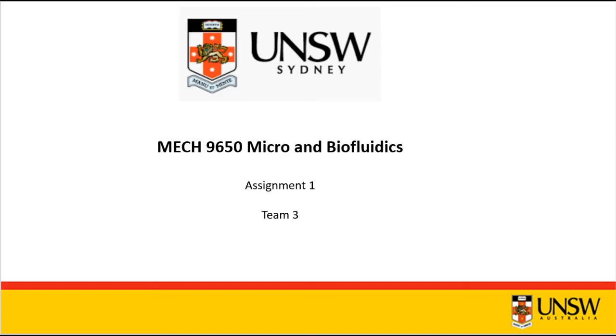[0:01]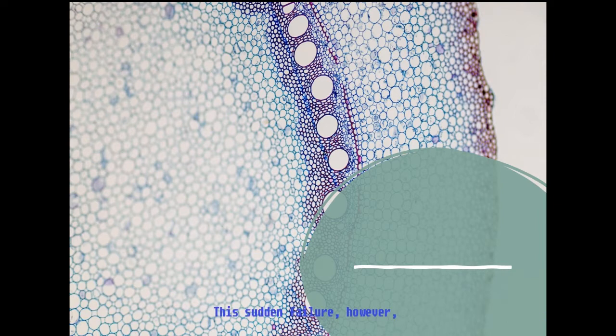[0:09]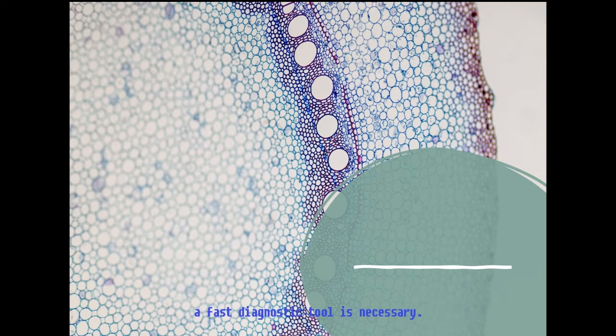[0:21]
Kidney disease occurs in about 1 in 10 adults in Australia and can often appear suddenly. This sudden failure, however, 90% of the time is symptomless, with pains showing only at the beginning of kidney failure. The common detection method involves a 24-hour urine analysis. A fast diagnostic tool is therefore necessary.
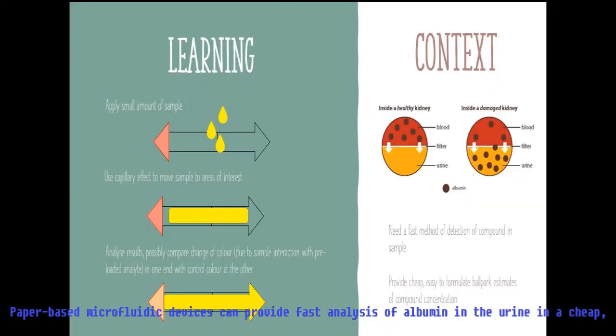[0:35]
Failure of the kidney is always coincident with the presence of albumin in the urine, a compound that is usually filtered by the kidneys. So rapid detection of albumin in urine can provide vital information to emergency health services.
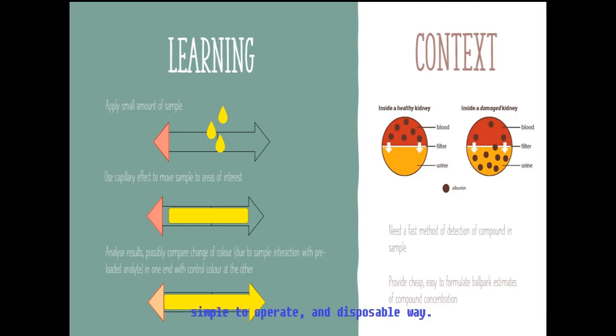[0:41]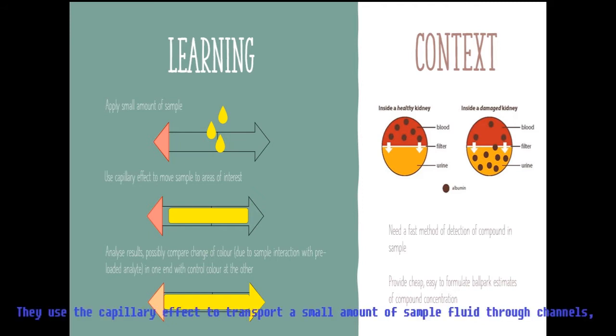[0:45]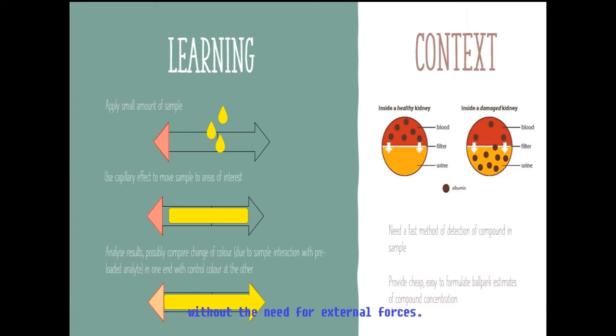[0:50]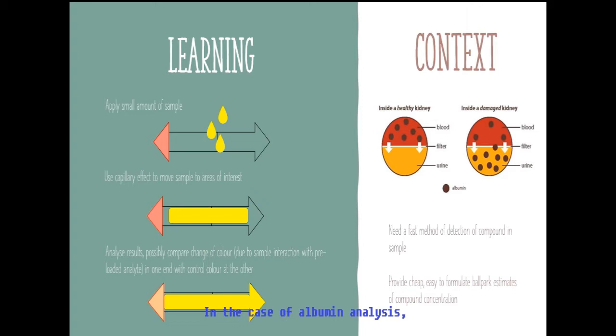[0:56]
Paper-based microfluidic devices can provide a fast analysis of albumin in urine in a cheap, simple to operate and disposable way. They use the capillary effect to transport a small amount of sample fluid through channels without need for external forces. These channels may contain reagents that interact with the sample should an analyte be present. In the case of albumin analysis, reagents exist on the market that could be added to microfluidic channels to create a change in colour should albumin be in the urine.
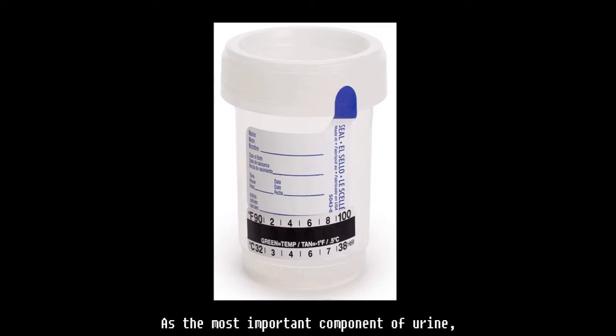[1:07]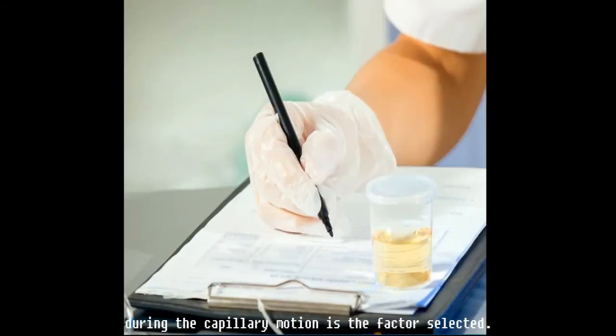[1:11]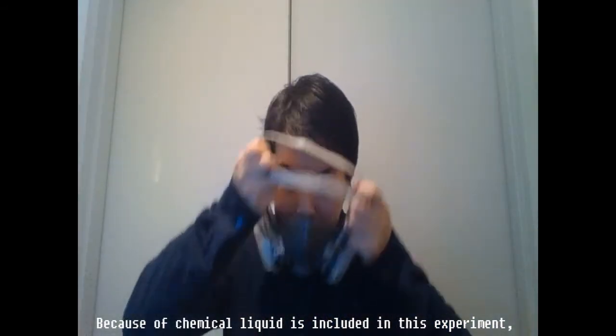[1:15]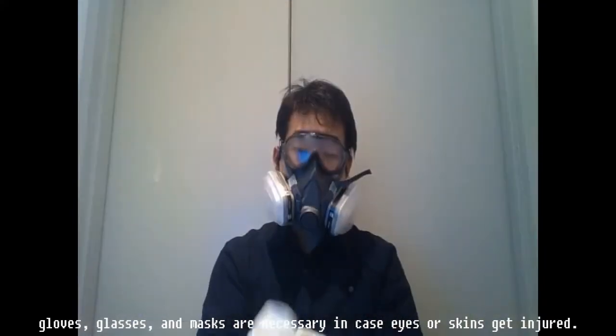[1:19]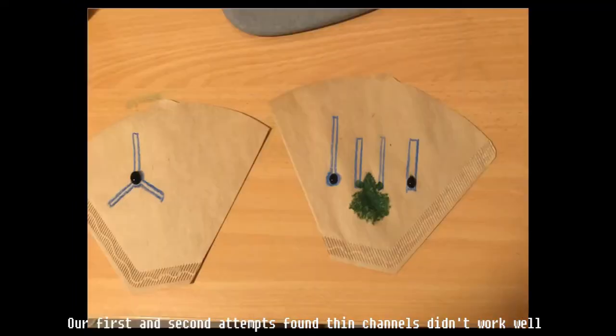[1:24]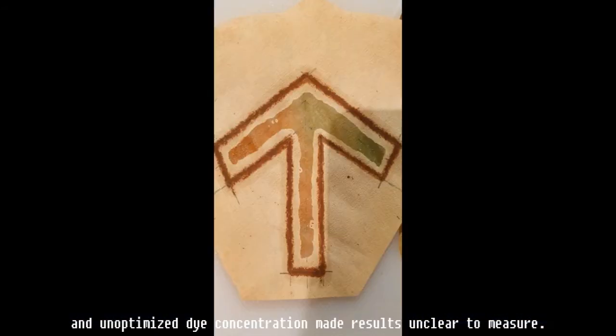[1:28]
As the most important component of urine, inorganic salt was the factor selected, since it plays the most important role during the capillary motion. Because chemical liquid is included in this experiment, gloves, glasses, and masks are necessary in case eyes or skin get injured. Our first and second attempts found thin channels didn't work well, and unoptimized dye concentration made the results unclear to measure.
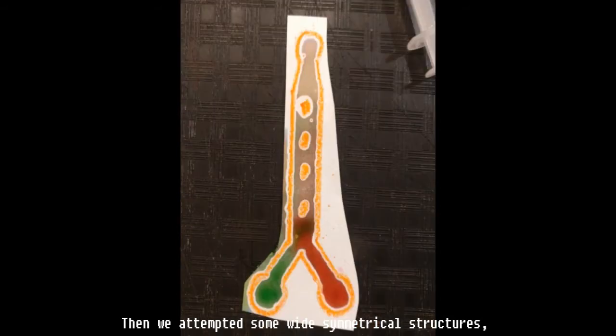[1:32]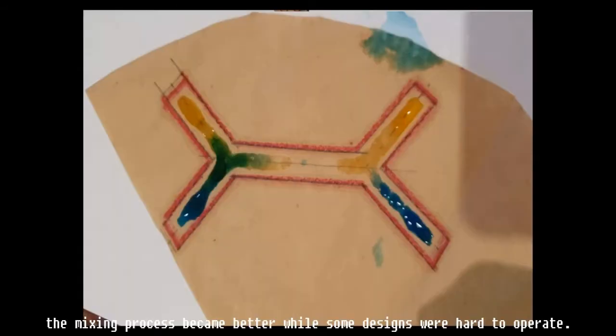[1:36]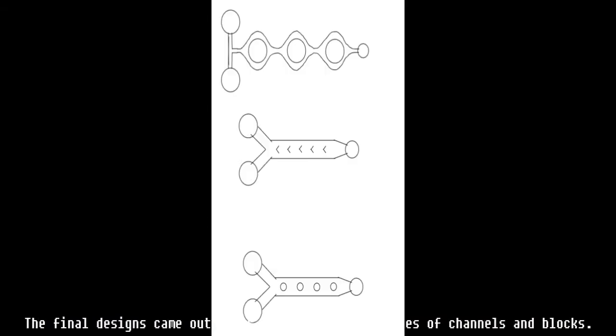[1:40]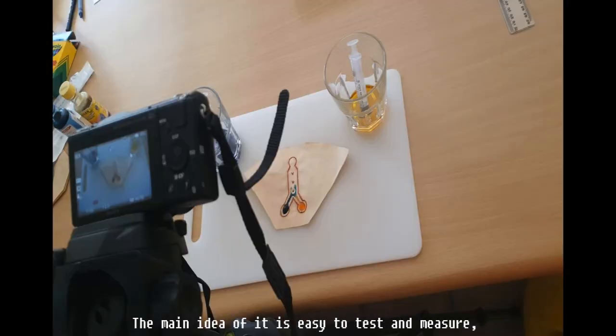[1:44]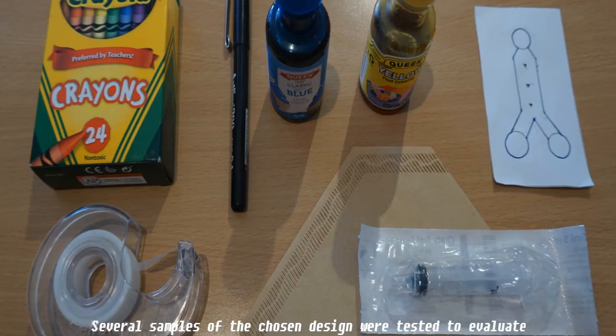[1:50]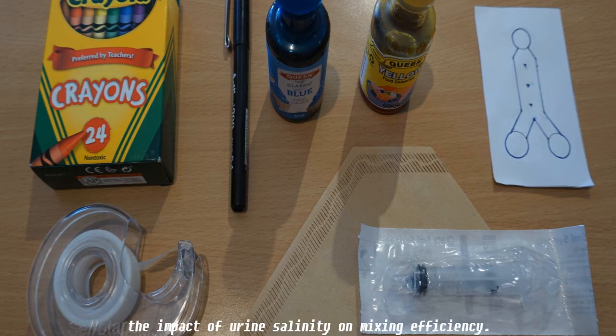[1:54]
Then we attempted some wide symmetrical structures. The mixing process became better, while some designs were hard to operate. The final designs came out after trying several matches of channels and blocks. The main idea of it is easy to test and measure, with the help of specific channel lines to control testing time. Several samples of the chosen design were tested to evaluate the impact of urine salinity on mixing efficiency.
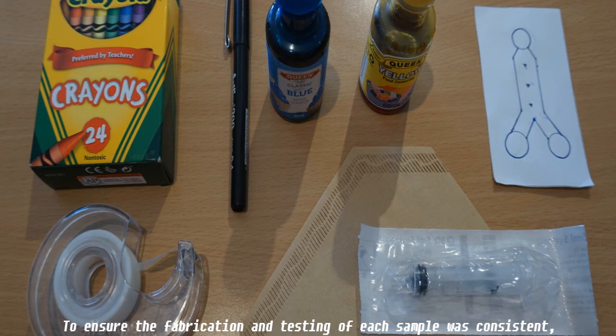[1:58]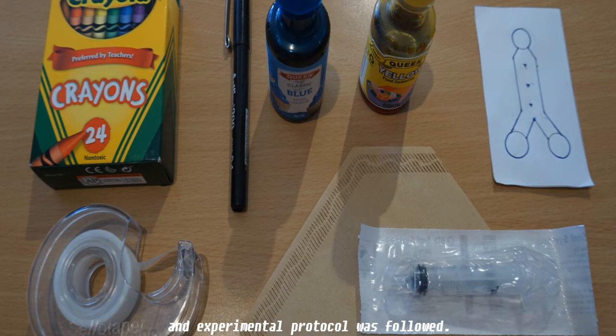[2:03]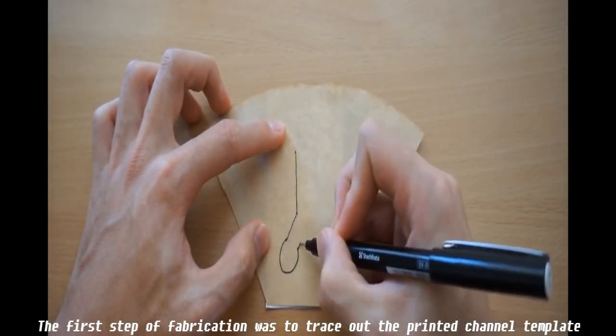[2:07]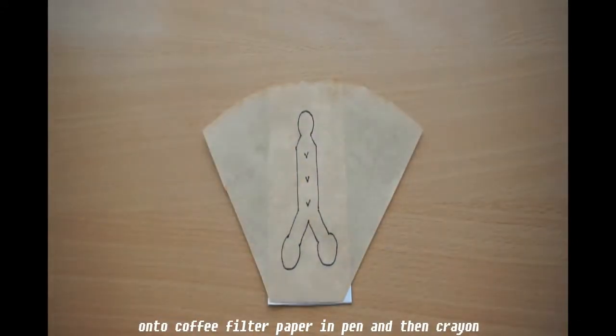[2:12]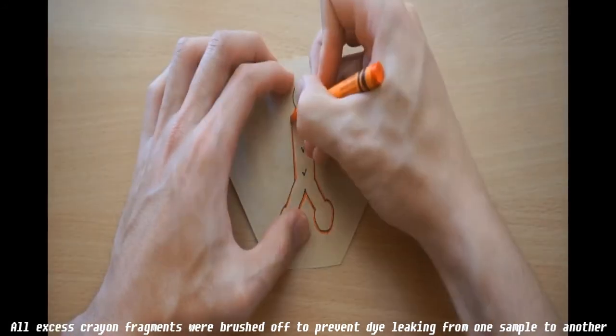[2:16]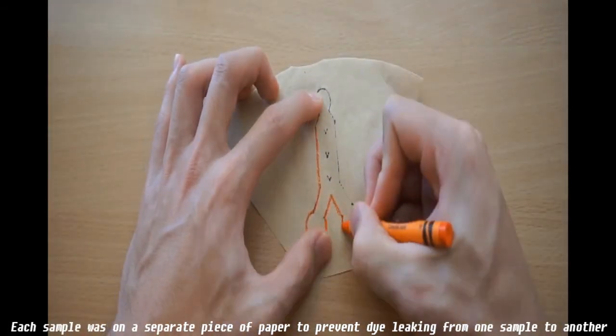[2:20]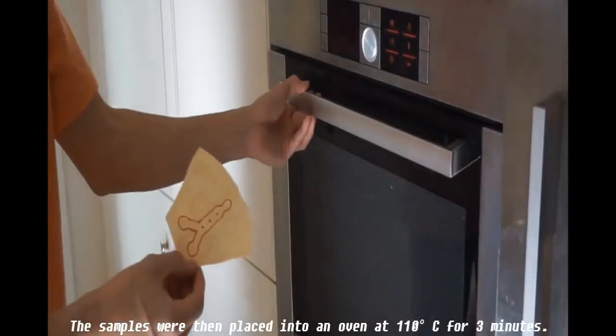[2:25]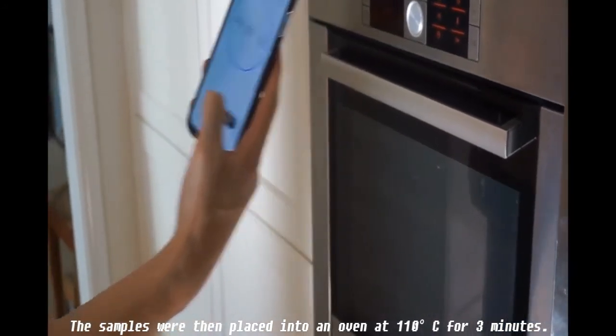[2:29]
To ensure the fabrication and testing of each sample was consistent, an experimental protocol was followed. The first step of fabrication was to trace out the printed channel template onto coffee filter paper in pen and then crayon. All excess crayon fragments were brushed off to prevent contamination of the channel. Each sample was on a separate piece of paper to prevent dye leaking from one sample to another. The samples were then placed into an oven at 110 degrees Celsius for 3 minutes.
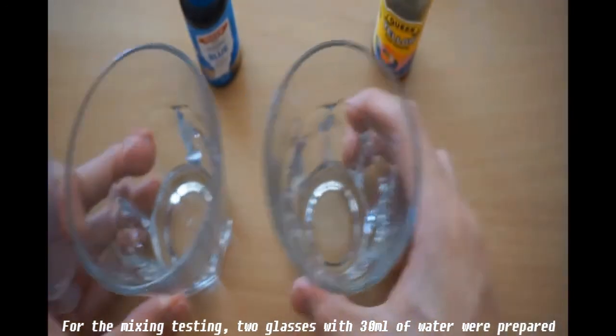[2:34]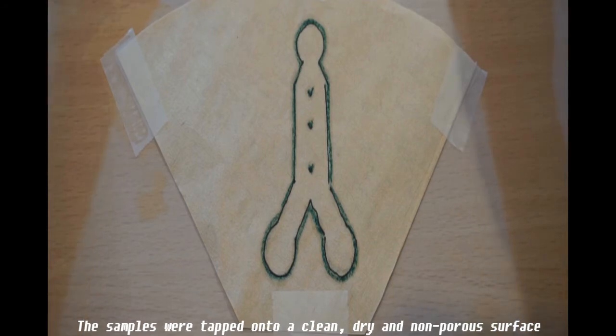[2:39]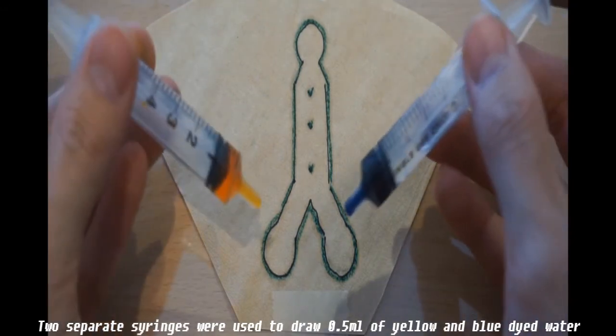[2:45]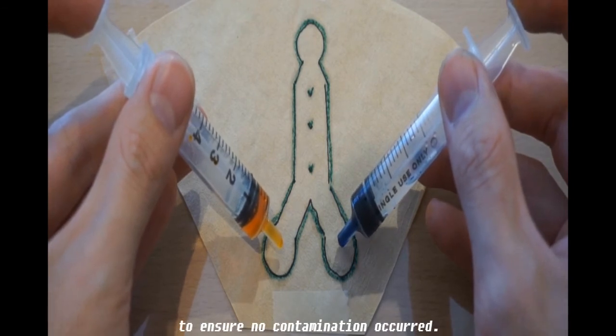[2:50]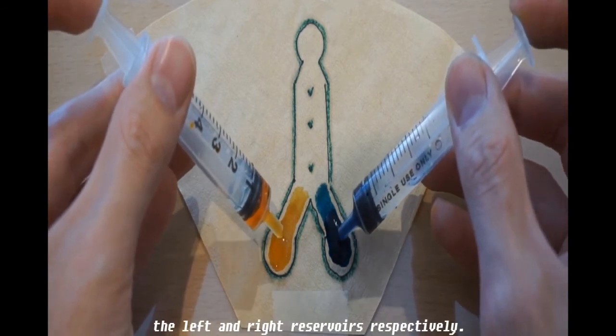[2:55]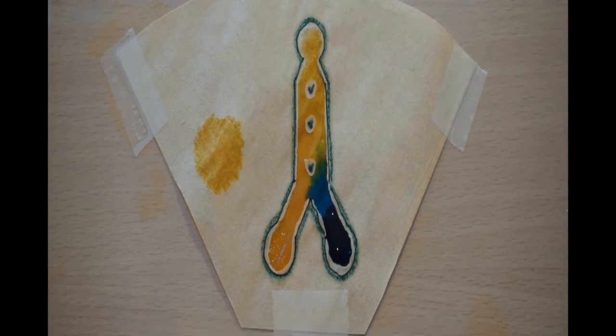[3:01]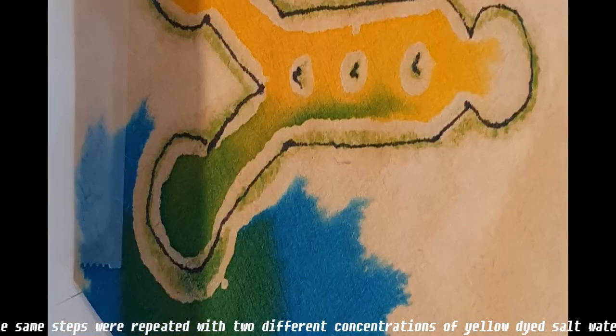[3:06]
For the mixing testing, 2 glasses with 30 milliliters of water were prepared with 10 drops of yellow and blue food dye. The samples were then taped onto a clean, dry and non-porous surface. 2 separate syringes were used to draw 0.5 mL of yellow and blue dyed water to ensure that no contamination occurred. The yellow and blue fluid was carefully dispensed into the left and right reservoirs respectively. A photo of the sample was taken once the fluid had stopped flowing. The same steps were repeated with 2 different concentrations of yellow dyed salt water. 3 trials were completed for each solution.
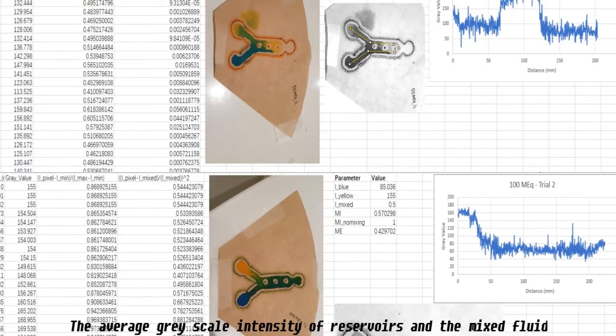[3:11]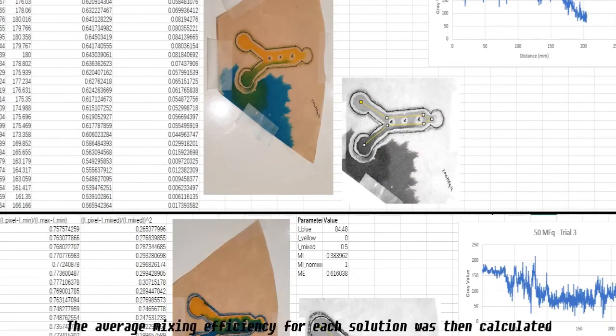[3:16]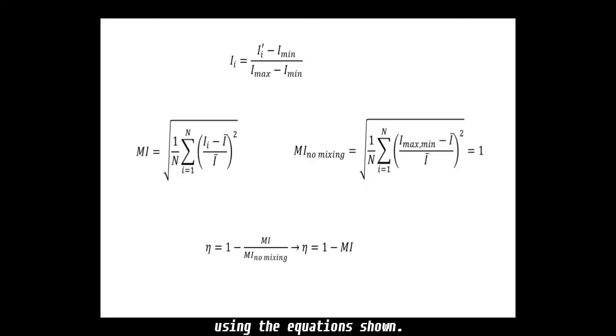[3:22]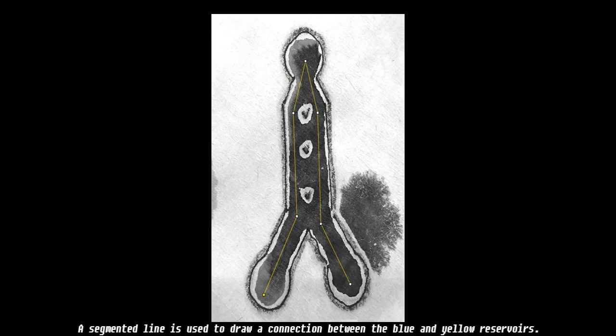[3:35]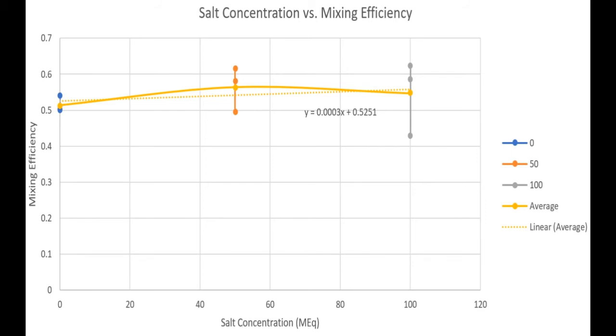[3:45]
The average grayscale intensity of the reservoirs and the mixed fluid was measured using ImageJ. The average mixing efficiency for each solution was then calculated using the equation shown. The length for the straight side of the main channel is 15 millimeters. A pixel to millimeter scale is set in ImageJ using the yellow line as a measure in each image. A segmented line is used to draw a connection between the blue and yellow reservoirs. The image is converted to 8-bit grayscale and normalized. Then, the intensity of the pixels along the line are taken and stored. Using the equations previously shown, the average mixing efficiency was plotted against the salt concentration.
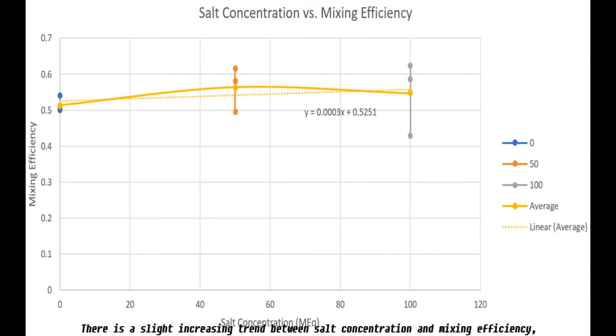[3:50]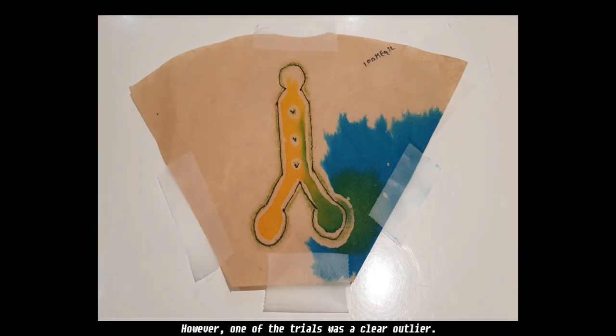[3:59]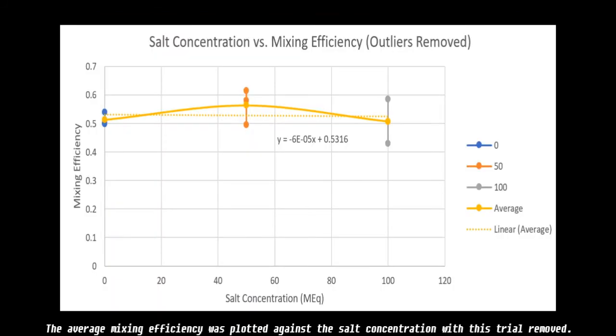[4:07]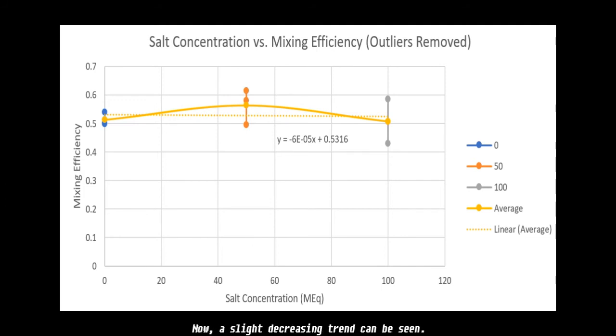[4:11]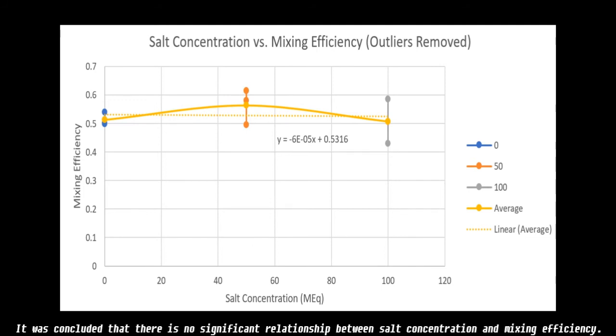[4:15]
There is a slight increasing trend between salt concentration and mixing efficiency, with average mixing efficiencies recorded in the range of 50 to 60%. However, one of the trials was a clear outlier. The blue reservoir in this trial was completely mixed in the green, and thus there was no value recorded for the intensity of the blue reservoir. The average mixing efficiency was plotted against the salt concentration with this trial removed. Now, a slight decreasing trend can be seen. It was concluded that there is no significant relationship between salt concentration and mixing efficiency.
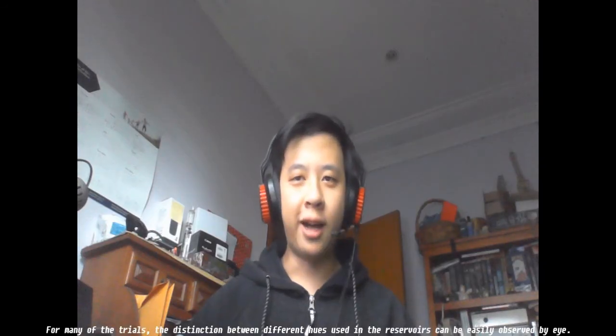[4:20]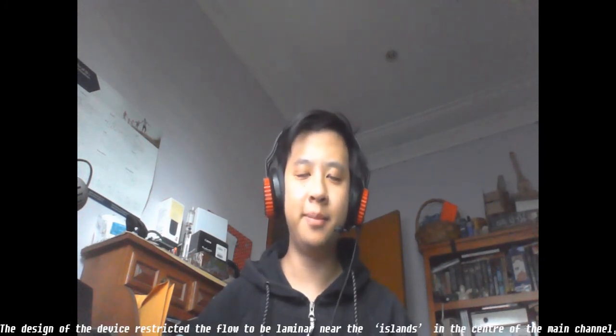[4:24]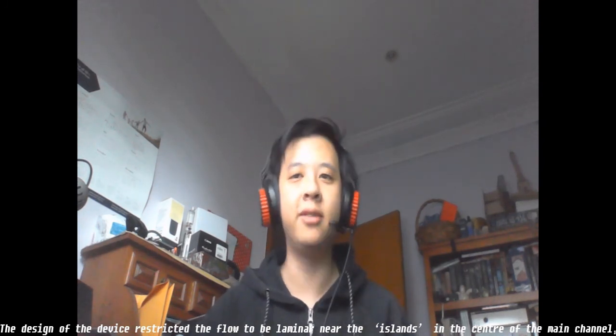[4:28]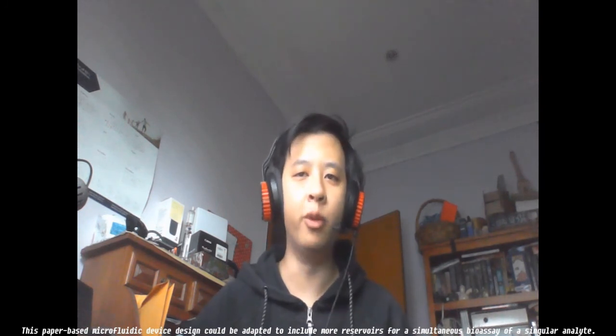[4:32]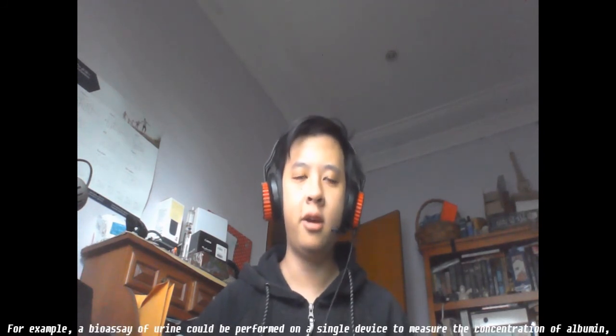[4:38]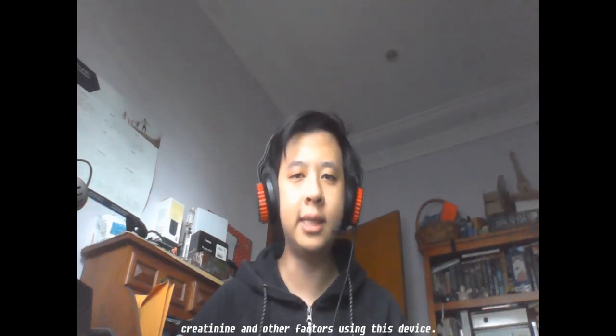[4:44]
In many of the trials, the distinction between different hues used in the reservoirs can be easily observed by eye. The design of the device restricted the flow to be laminar near the islands in the center of the main channel, which helped to improve mixing of colors. This paper-based microfluidic device design could be adapted to include more reservoirs for a simultaneous bioassay of a single analyte. For example, a bioassay of urine could be performed on a single device to measure the concentration of albumin, creatinine, and other factors using this device.